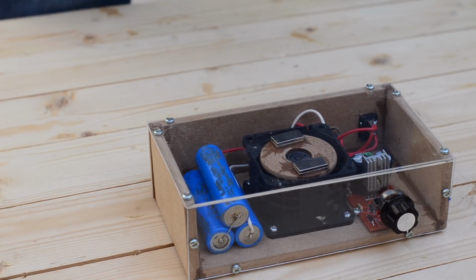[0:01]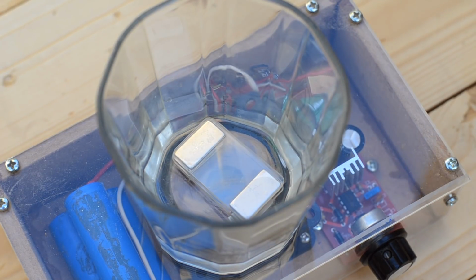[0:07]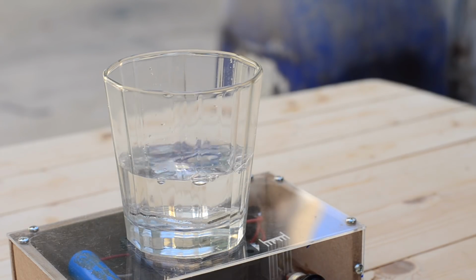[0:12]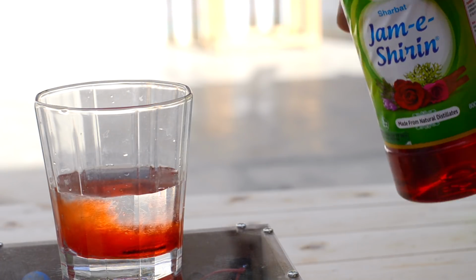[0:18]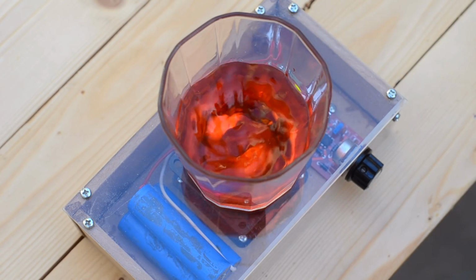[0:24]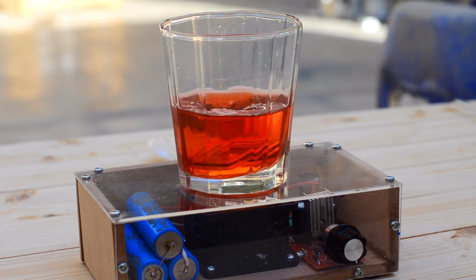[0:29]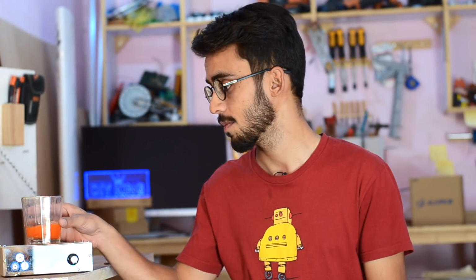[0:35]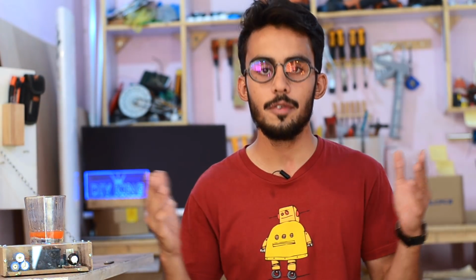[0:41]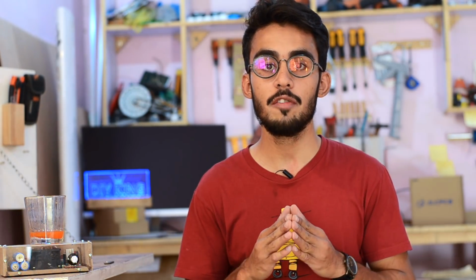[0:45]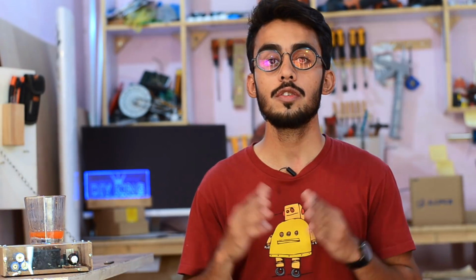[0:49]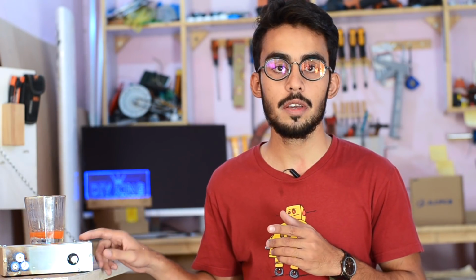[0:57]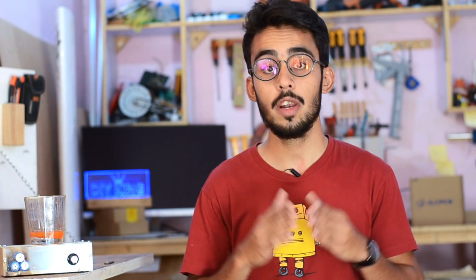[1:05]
Well, in today's project video, we are going to build ourselves a magnetic stirrer by using commonly available hardware such as a bunch of MDF sheets, a 12 volt PC fan, and a bunch of old laptop batteries. The best part about this magnetic stirrer is that it has variable speed control so that we can dissolve anything in variable density solutions. So have a look at how you can build one for yourself.
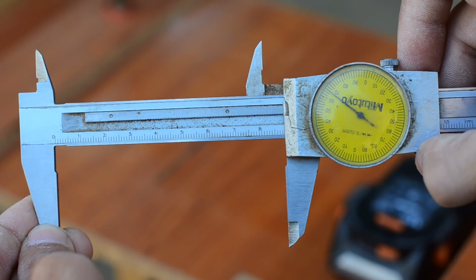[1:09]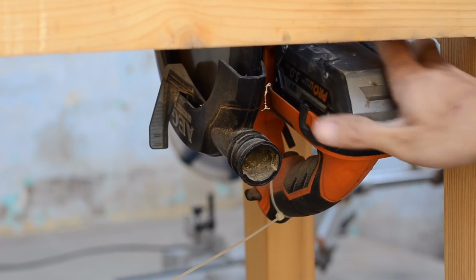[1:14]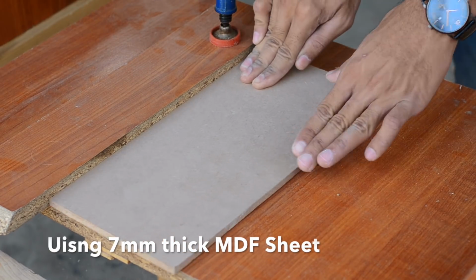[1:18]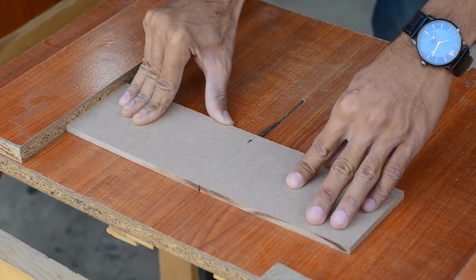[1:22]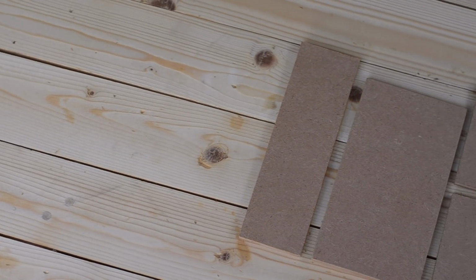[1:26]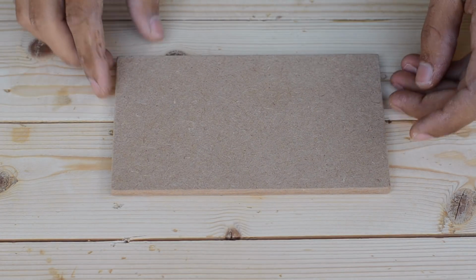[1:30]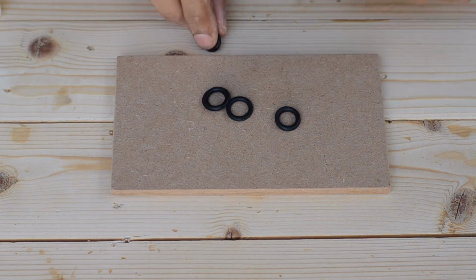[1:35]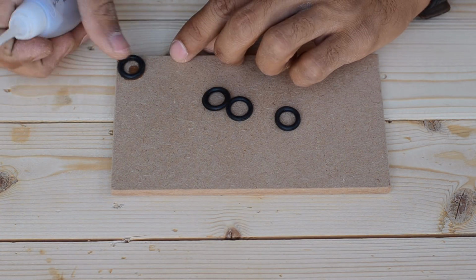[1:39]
I started by cutting the pieces for the enclosure using my homemade table saw. All the pieces are made out of 7mm thick MDF sheet. Check the description below for the dimensions of each of these pieces. I have glued rubber O-rings to each corner of the base plate. This will later help us to avoid the whole unit from skidding during operation.
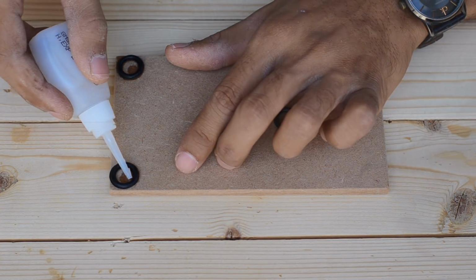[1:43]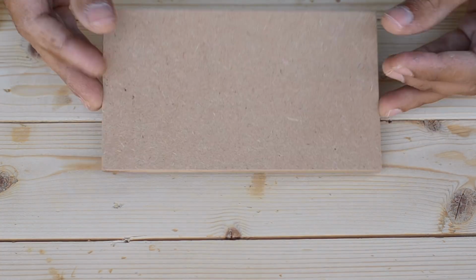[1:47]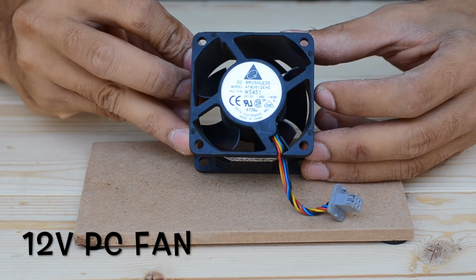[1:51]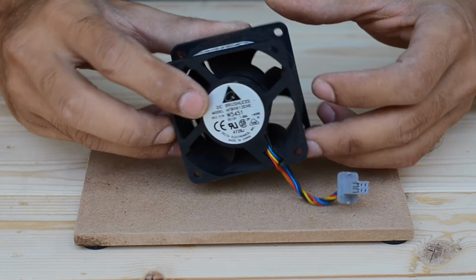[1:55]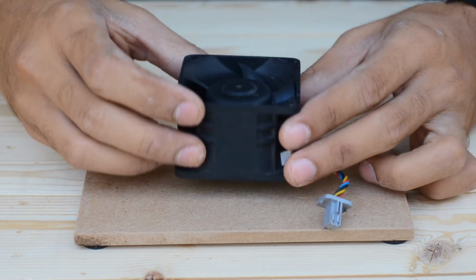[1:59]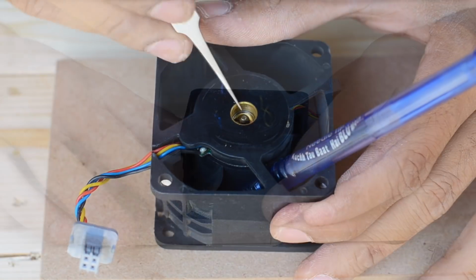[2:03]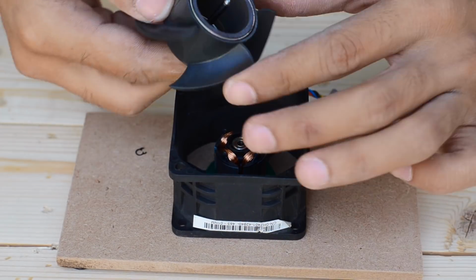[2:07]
To drive the rotating head, I've used a brushless PC fan to make the whole unit power efficient as compared to using a brushed motor. This one is rated at 12 volt and draws up to 1.7 amps of current. Since we don't want the fan to blow any air, I've torn down all the fins from the motor bell.
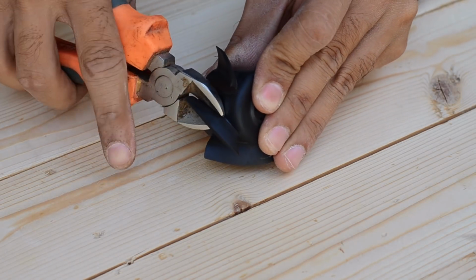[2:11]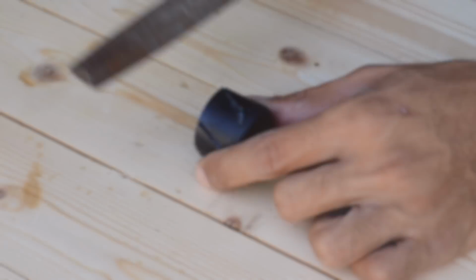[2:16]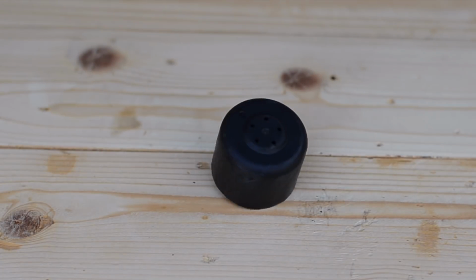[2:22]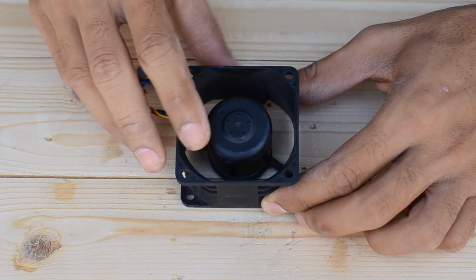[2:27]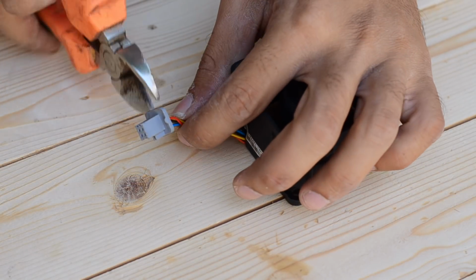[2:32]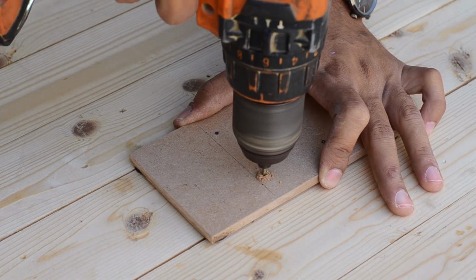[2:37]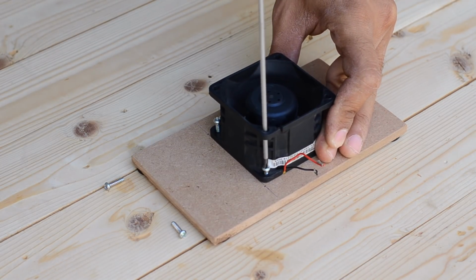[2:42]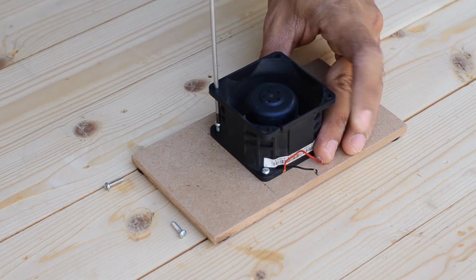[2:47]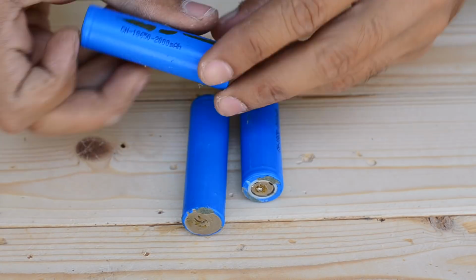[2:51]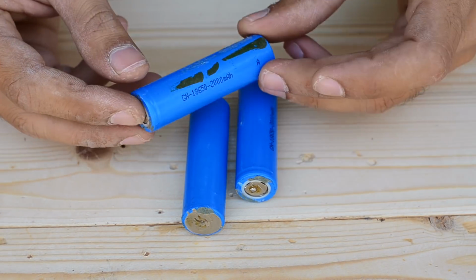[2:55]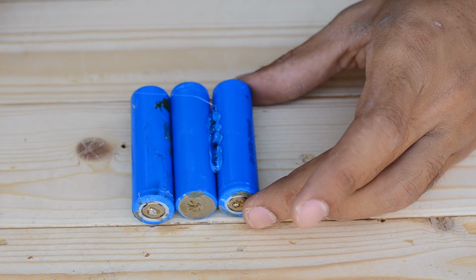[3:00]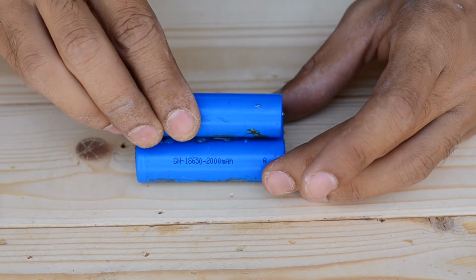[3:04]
Now to power this magnetic stirrer, I'm going to use 3 lithium polymer cells that I've got from an old laptop battery. Each one of them is rated at 2000 mAh and has a potential of nearly 3.7 volts, which gives us an output of 12 volt when connected in series.
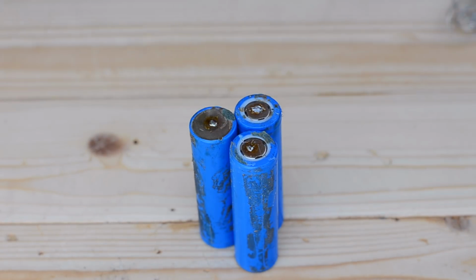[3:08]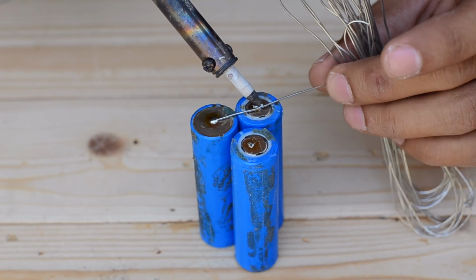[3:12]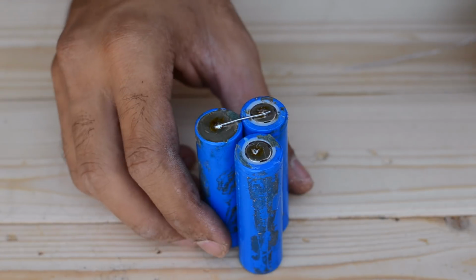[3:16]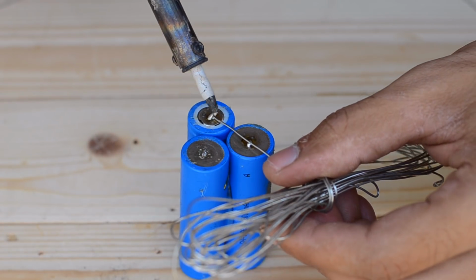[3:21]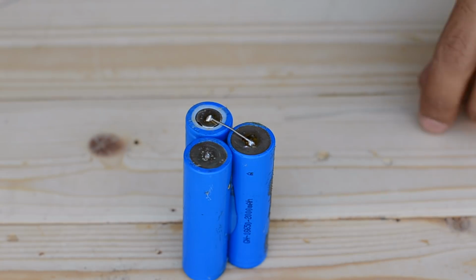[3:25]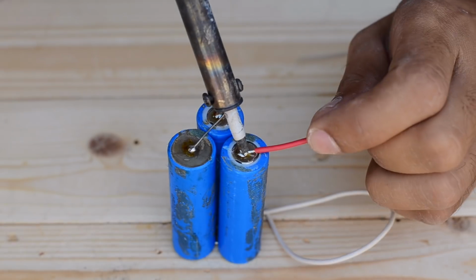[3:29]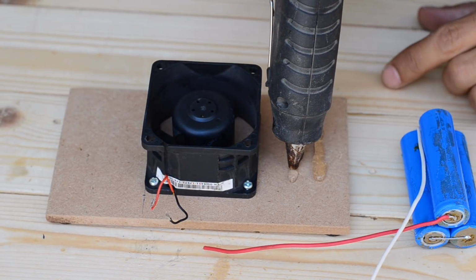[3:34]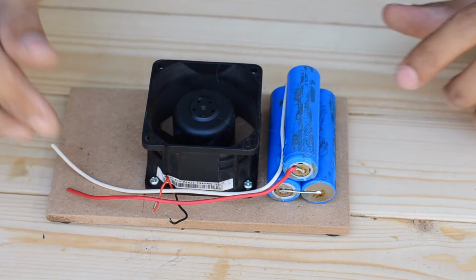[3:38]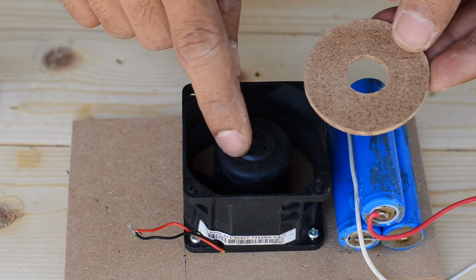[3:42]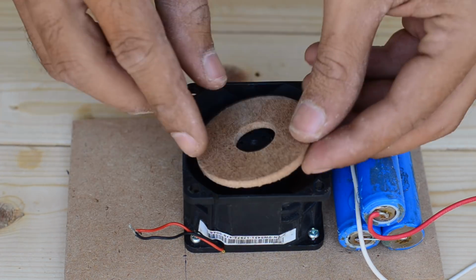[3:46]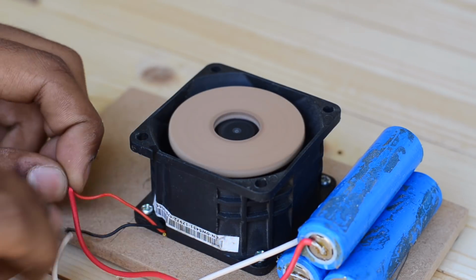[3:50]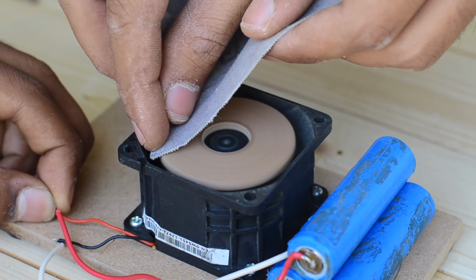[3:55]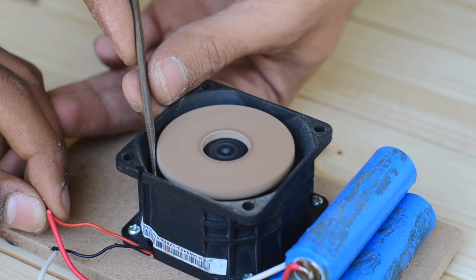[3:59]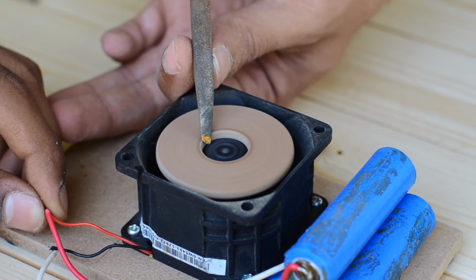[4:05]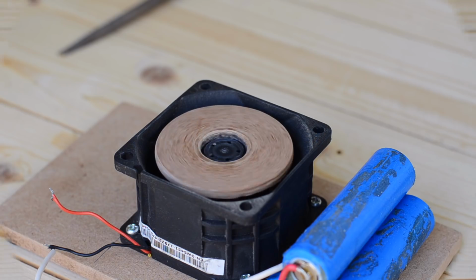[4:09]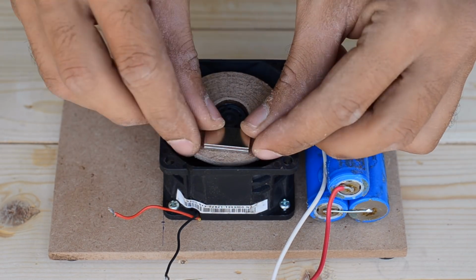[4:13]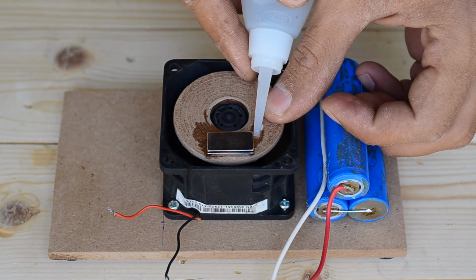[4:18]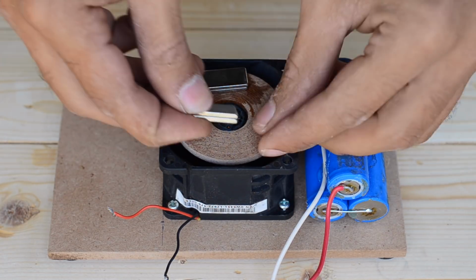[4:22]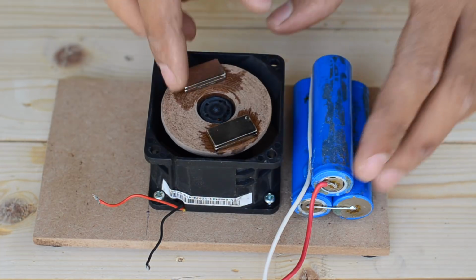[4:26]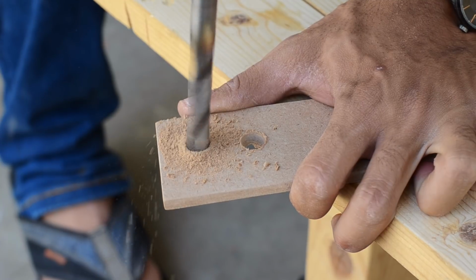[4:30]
I've glued a 3mm thick MDF disc to the rotating head, which gives me more area to securely glue the magnets over it later. Here I'm using some powerful neodymium magnets. The link to them will be given in the description, so be sure to check it out. Later, I've made some slots to mount a switch and a charging jack at the rear side of the enclosure.
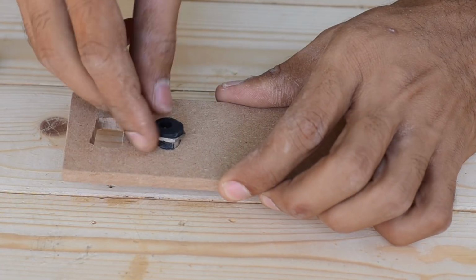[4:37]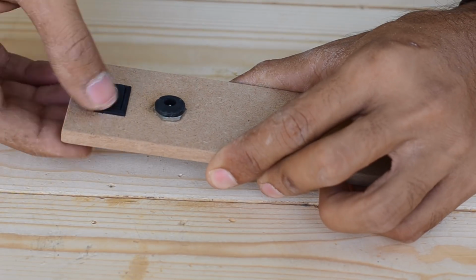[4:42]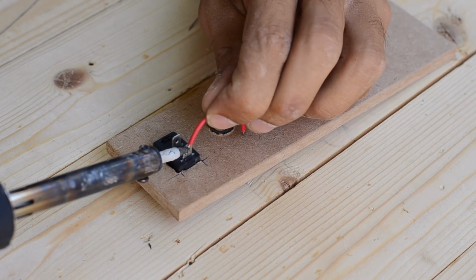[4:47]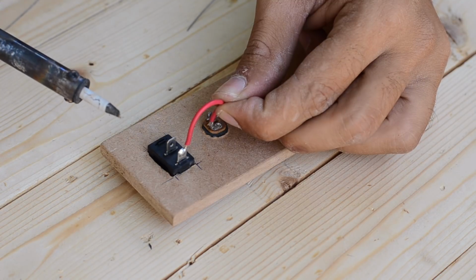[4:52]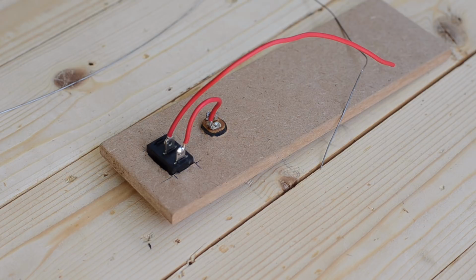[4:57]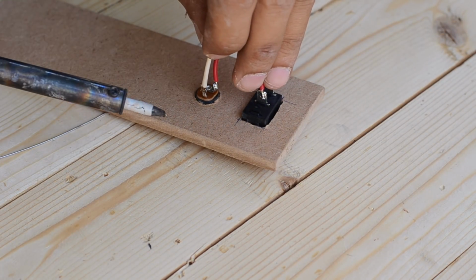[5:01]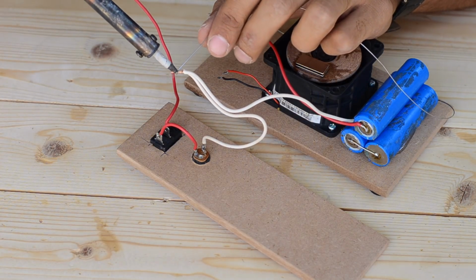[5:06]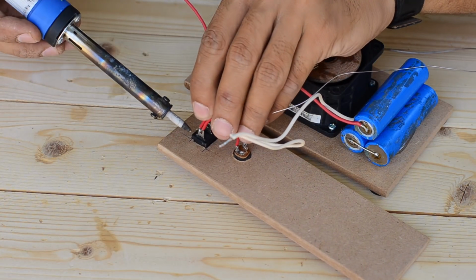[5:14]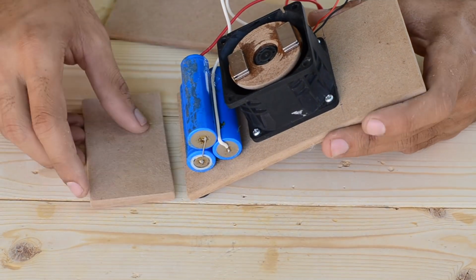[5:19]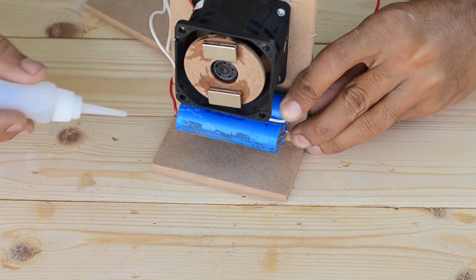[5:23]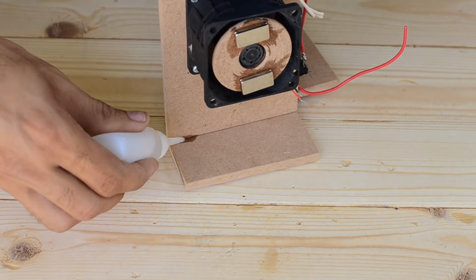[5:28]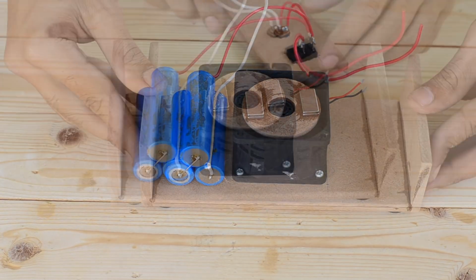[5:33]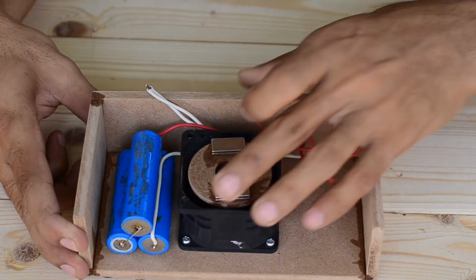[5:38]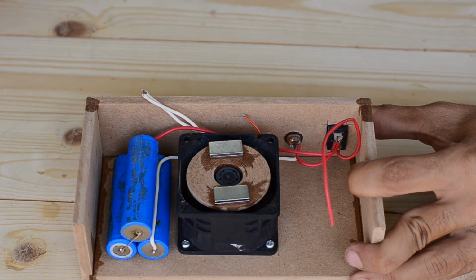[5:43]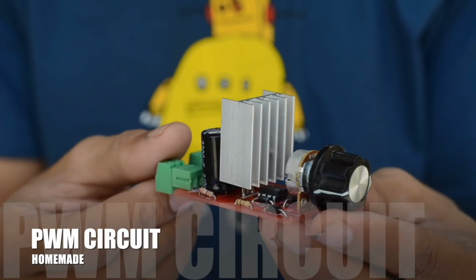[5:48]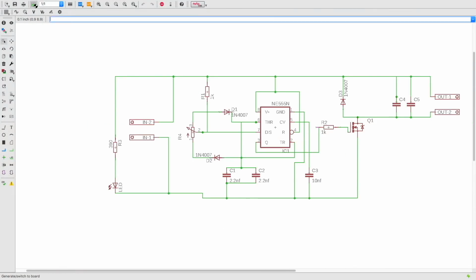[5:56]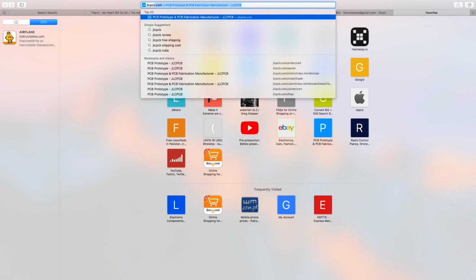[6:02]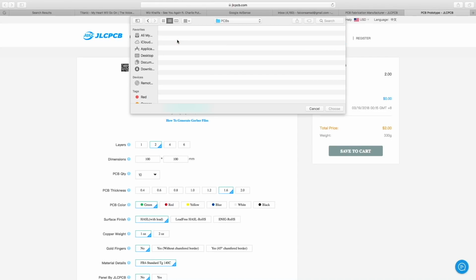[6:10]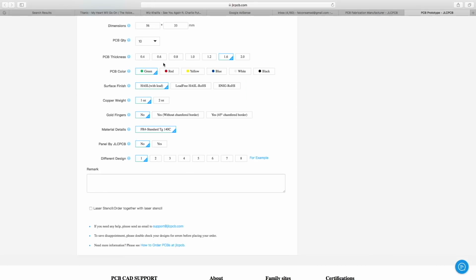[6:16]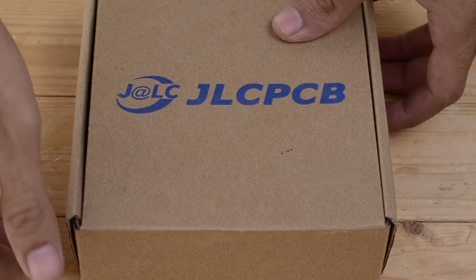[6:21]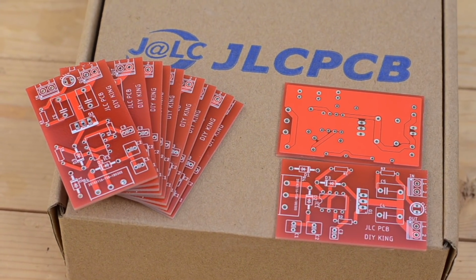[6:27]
Now, to control the speed of the rotating head, I've decided to build myself a pulse width modulation speed controller. For that, I've designed the PCBs for the required circuit by using the schematic, and later I've ordered my PCBs from jlcpcb.com. For the first order, I've got 10 PCBs for $2, which includes the shipment cost right at my doorstep. All I needed to order my PCBs is to upload the Gerber files and check out the options that are given below. That whole process took some time, but at the end, it was all worth it, as the quality of the PCB was just too good for the prices they are offering.
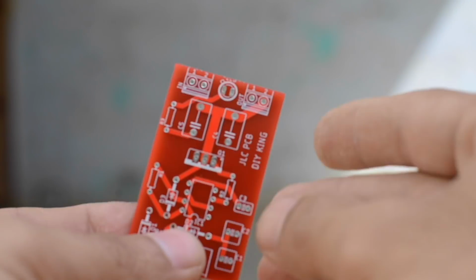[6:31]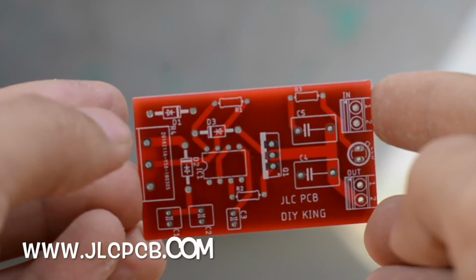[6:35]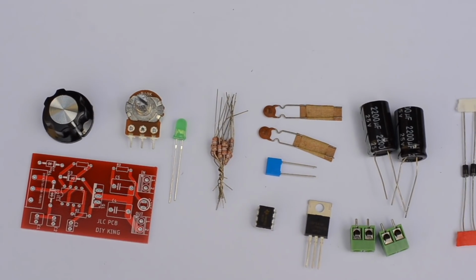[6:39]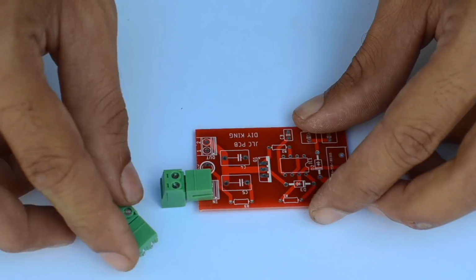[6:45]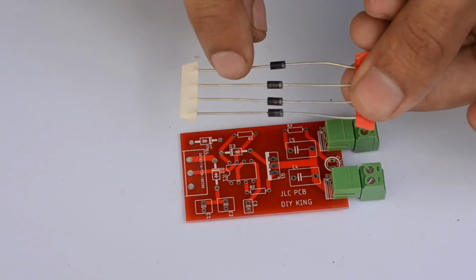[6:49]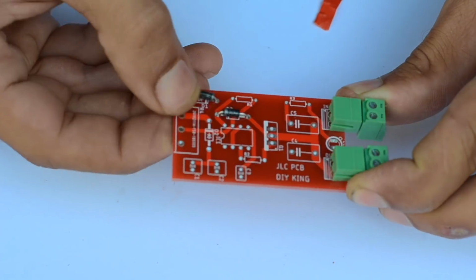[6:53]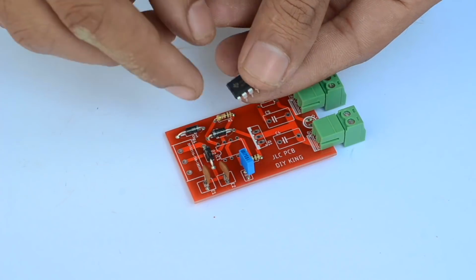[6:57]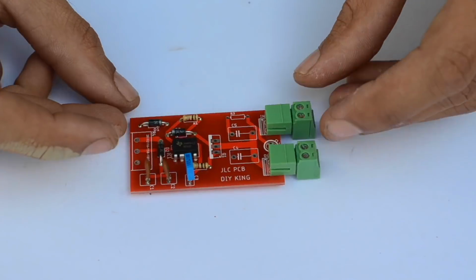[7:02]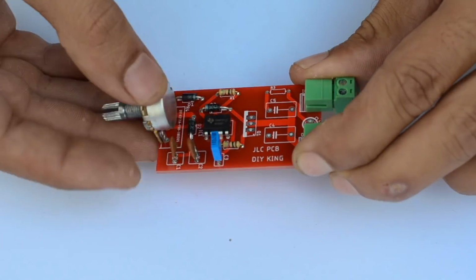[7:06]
The list of the components and the Gerber files for this printed circuit board along with the schematic for the circuit will be given at the Instructables blog spot for this project. The link to that will be given in the description below. For more details about this pulse width modulation circuit and its working, have a look at the previous project video. The link to that will be given at the top right corner of this video. So don't forget to check it out.
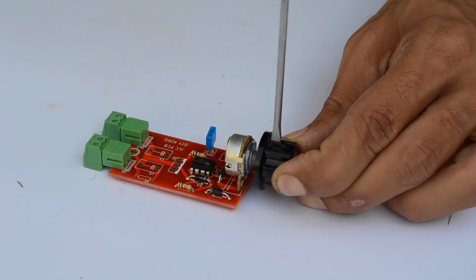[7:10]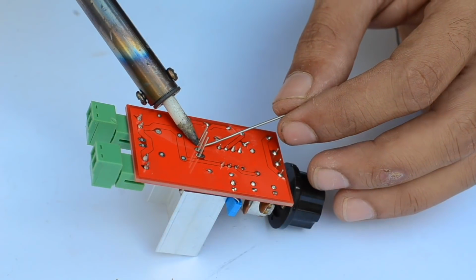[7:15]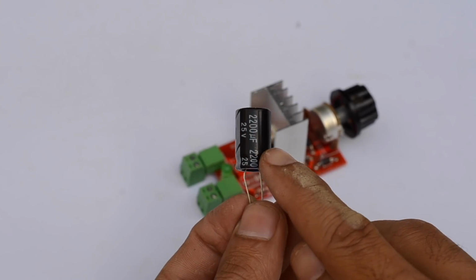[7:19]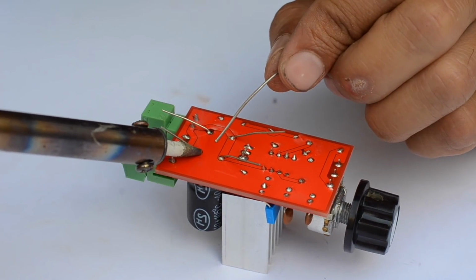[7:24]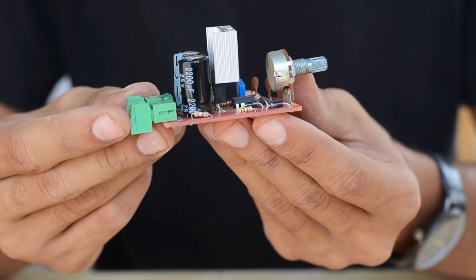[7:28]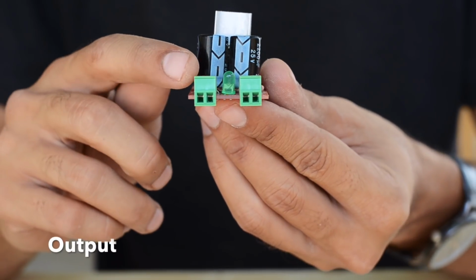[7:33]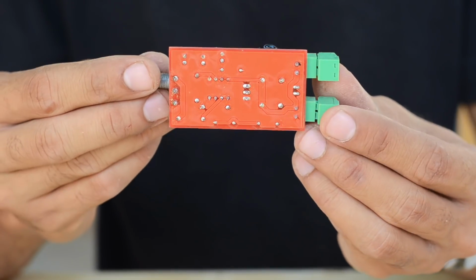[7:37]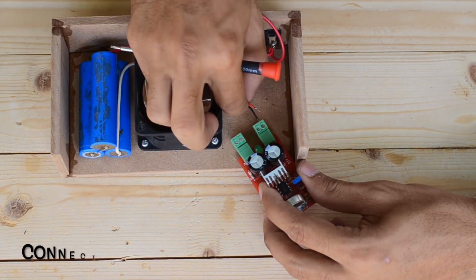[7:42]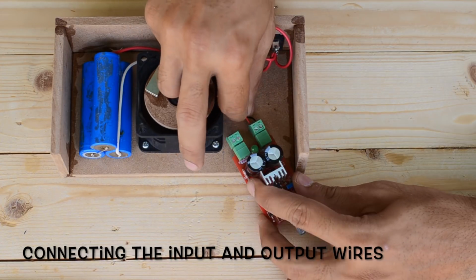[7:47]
The output of the speed controller is then connected to the PC fan or rotating head, whereas the input goes directly to the battery pack.
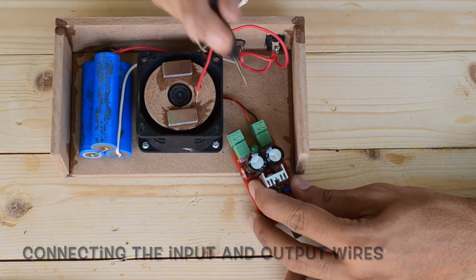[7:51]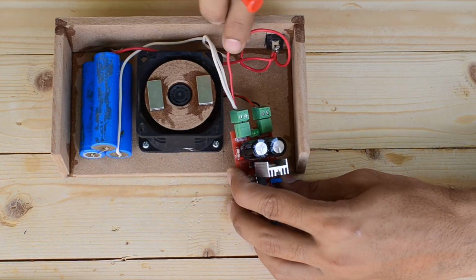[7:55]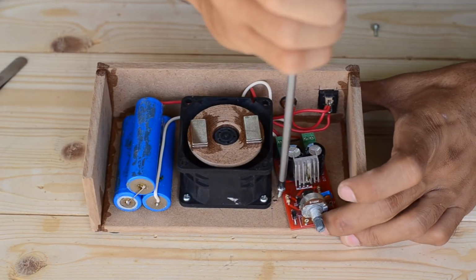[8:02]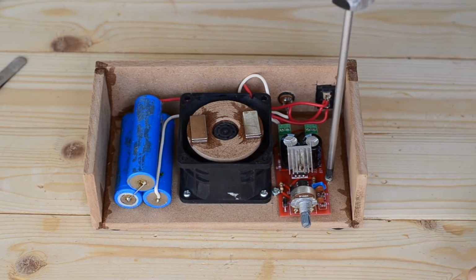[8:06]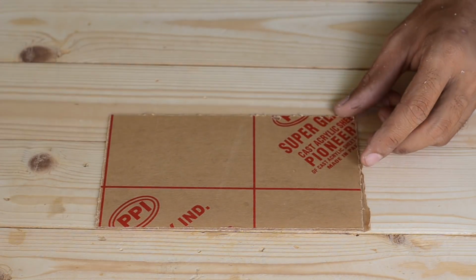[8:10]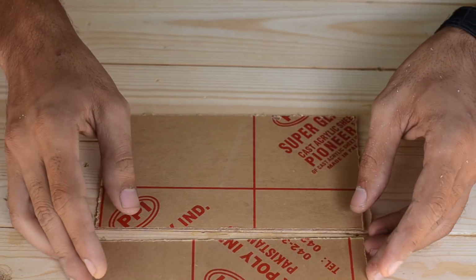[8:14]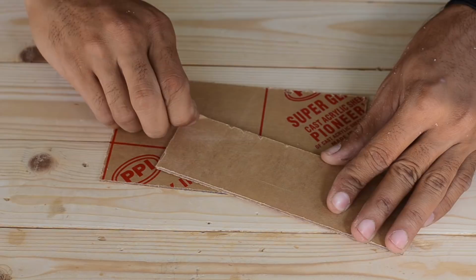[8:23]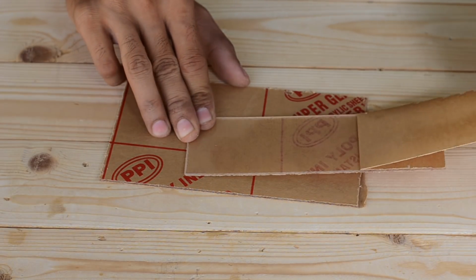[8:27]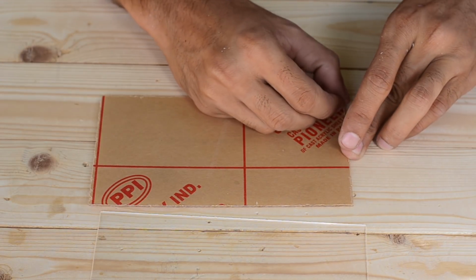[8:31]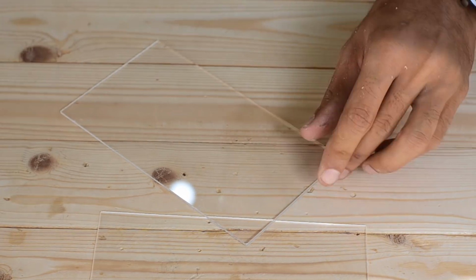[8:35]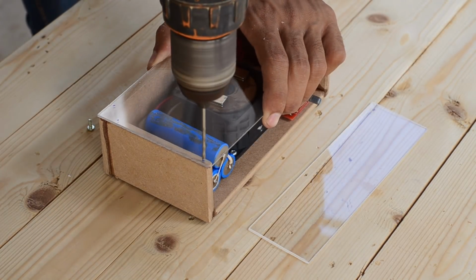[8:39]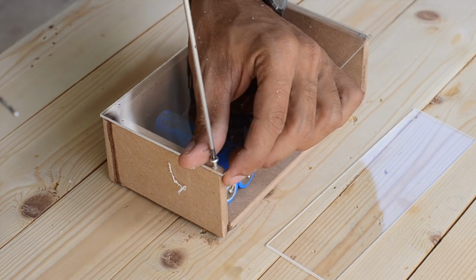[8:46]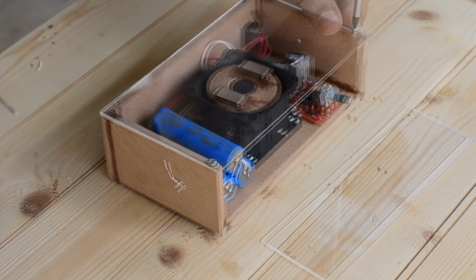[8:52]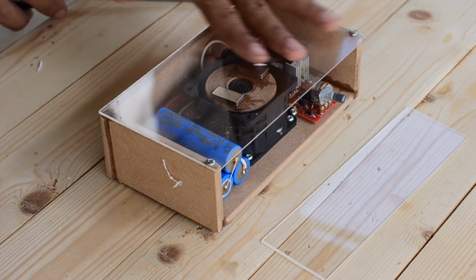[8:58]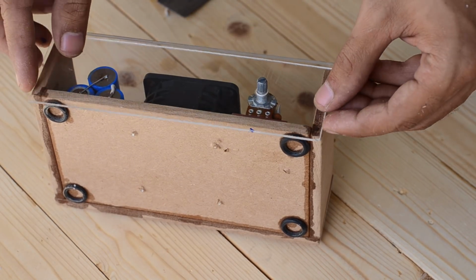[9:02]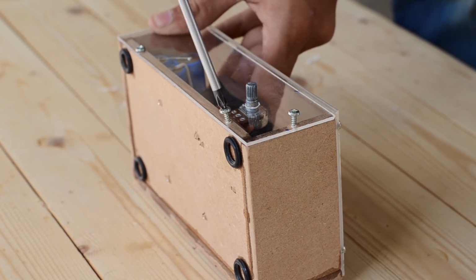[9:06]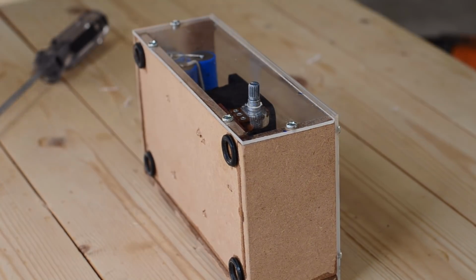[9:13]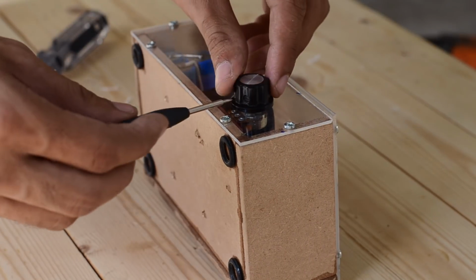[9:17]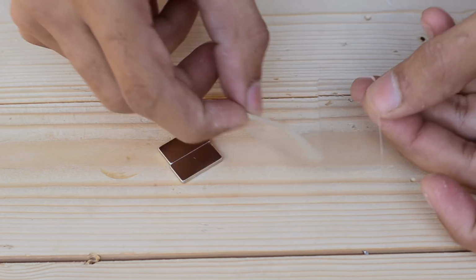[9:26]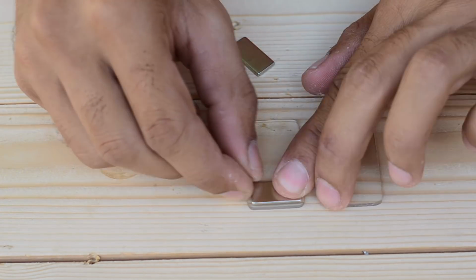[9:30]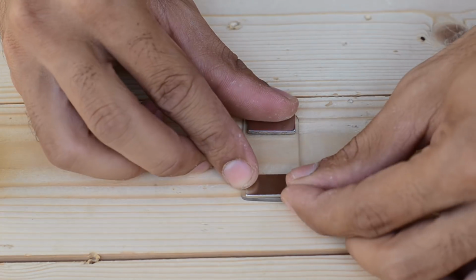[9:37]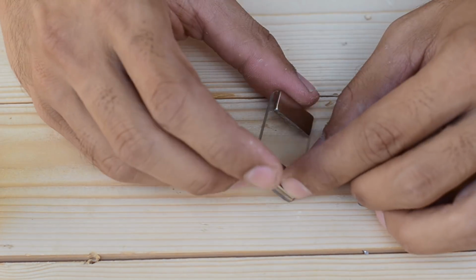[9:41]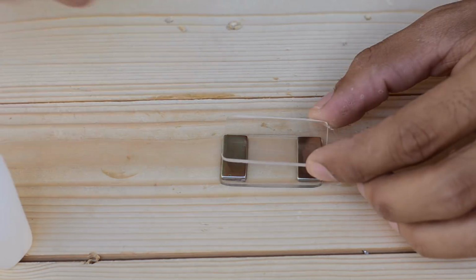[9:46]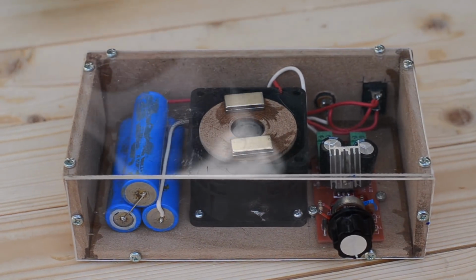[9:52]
The stirrer is made by gluing a pair of magnets sandwiched between two plexiglass sheets. With that being done, our magnetic stirrer is ready to stir our drinks.